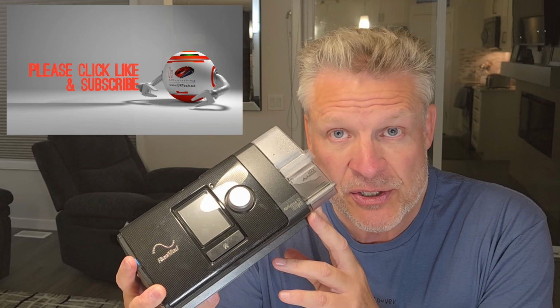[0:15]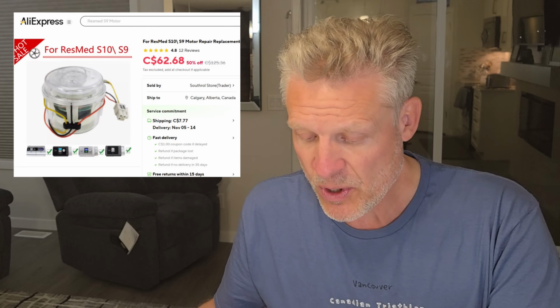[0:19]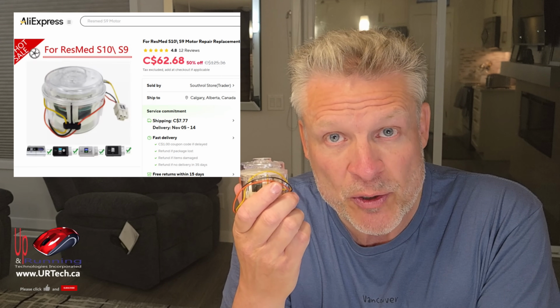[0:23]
We have a ResMed AirSense 10 here that has a loud pump, a loud motor. And so we're going to change it. This isn't that hard to do. You can do it if you have any capacity to use a screwdriver at all and are the tiniest bit adventurous. So we sourced a replacement motor off AliExpress, that's part of Alibaba, for about $75 Canadian, including shipping.
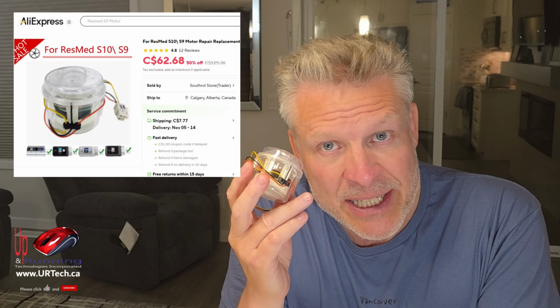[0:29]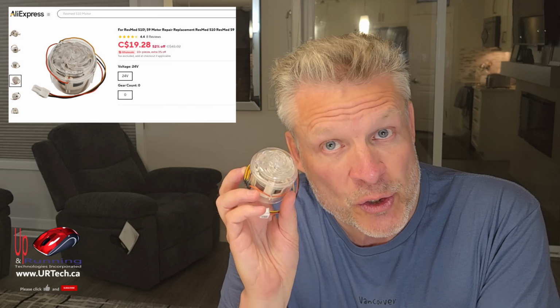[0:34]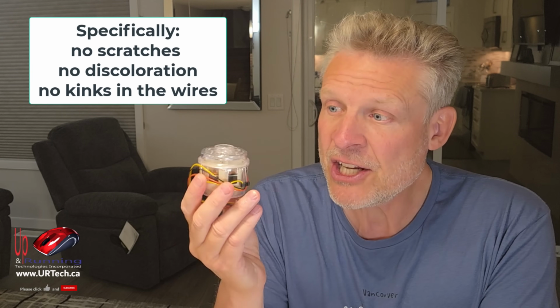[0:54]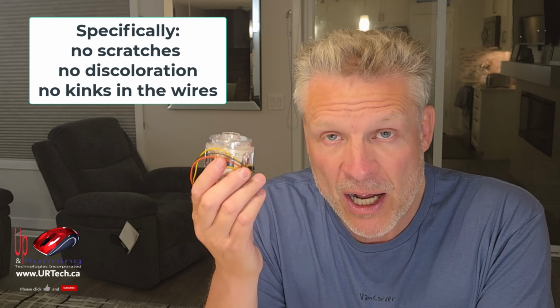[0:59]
And you've got to be careful when buying these replacement parts from overseas, because you can get used parts. Yes, they part these things out and sell you used parts. So if you find one for $20 or $30, yeah, it's probably used. Probably not what you want, whether it says tested or not. Whereas this one, I'm quite confident was new based on the condition that it appears to be here and how the pricing was consistent from other new vendors. But there's really no way for me to prove it. So I'm a bit of a gambler on this still.
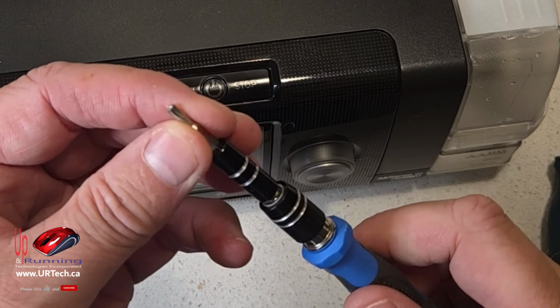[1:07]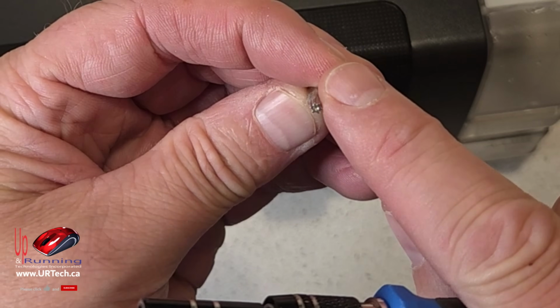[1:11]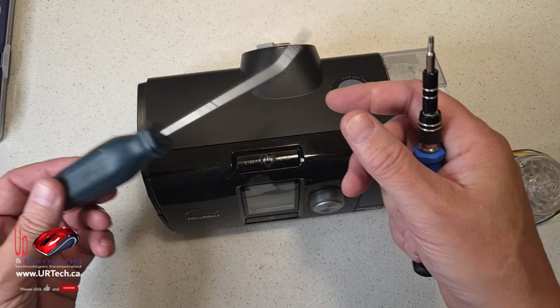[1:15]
So what you need is a Torx T10. The other thing you'll need is some sort of a pry tool. And I've just got a little screwdriver here. You can use an old credit card if that works for you.
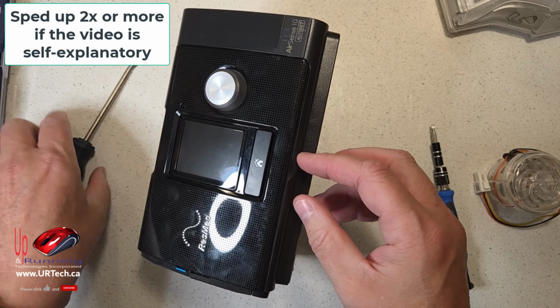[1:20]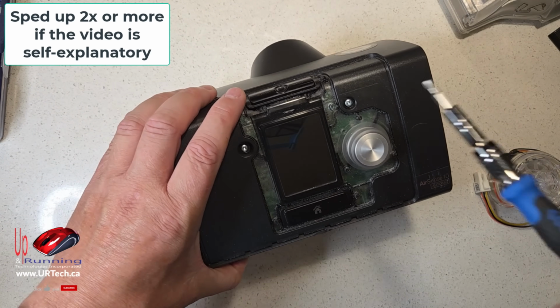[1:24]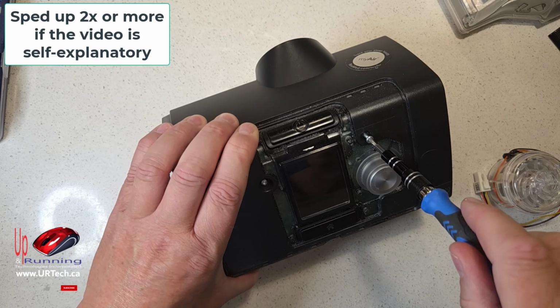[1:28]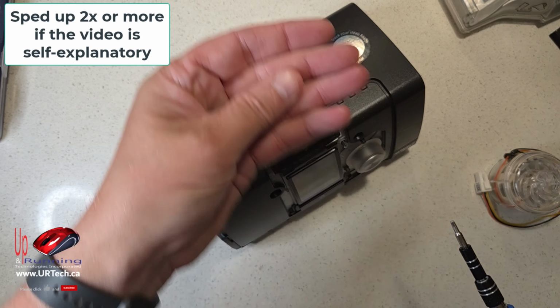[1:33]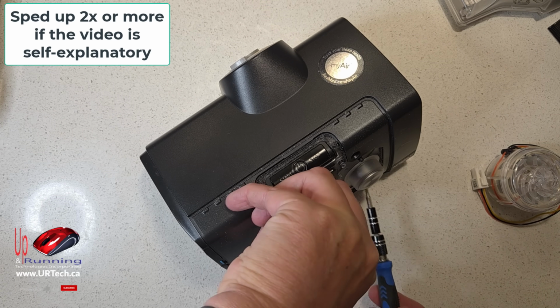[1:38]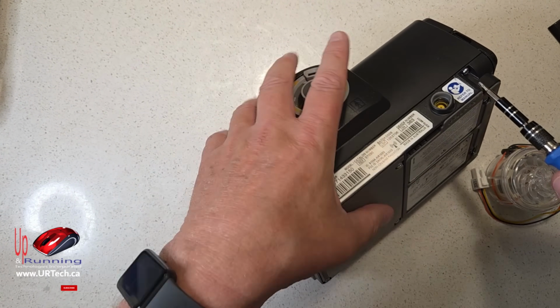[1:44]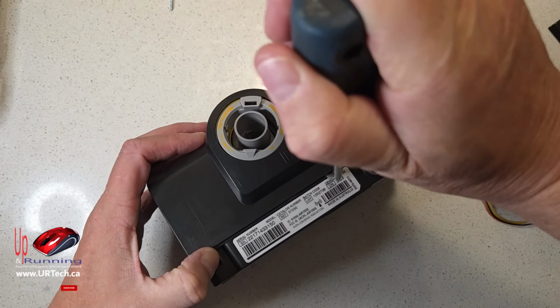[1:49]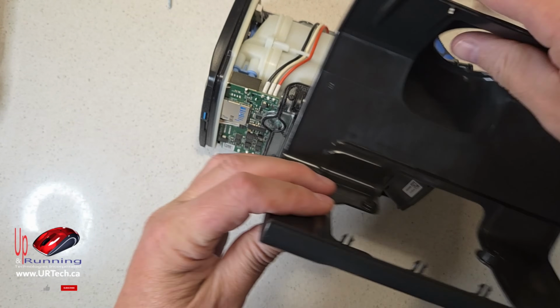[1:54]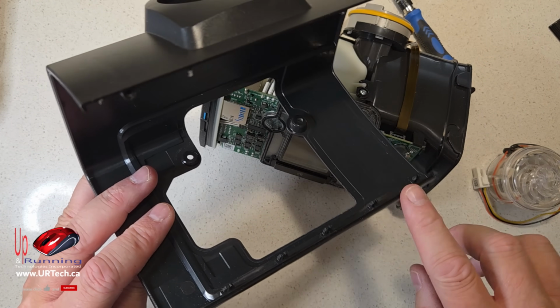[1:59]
One of the things we always tell you is to lay the screws out in the order in which they came out. However, I believe all of these are the same, so it doesn't make any difference. You don't need to worry about them. Hooks here. That's why you start from the back and not from the front. If you start from the front, you're going to break these tabs off. You don't want to do that.
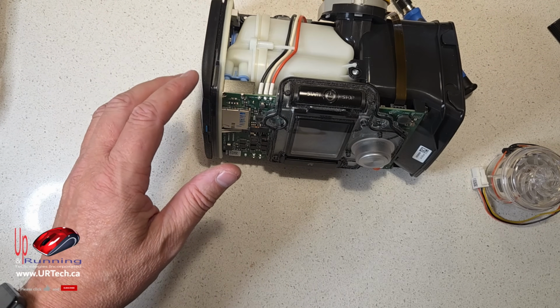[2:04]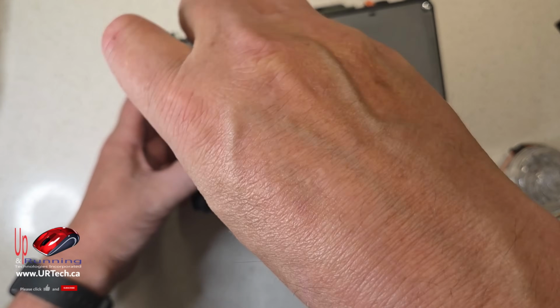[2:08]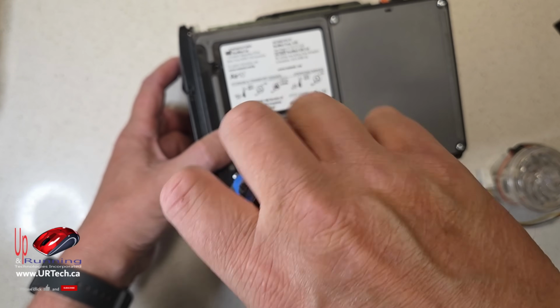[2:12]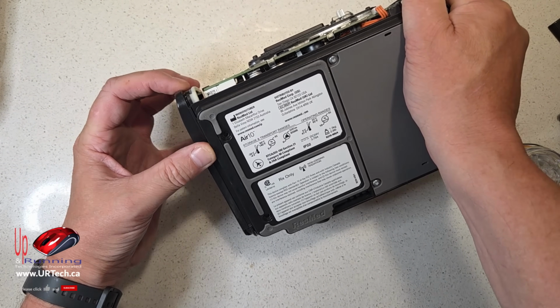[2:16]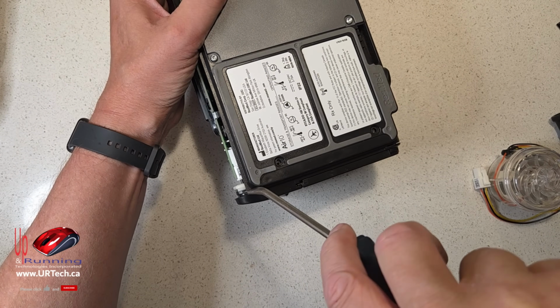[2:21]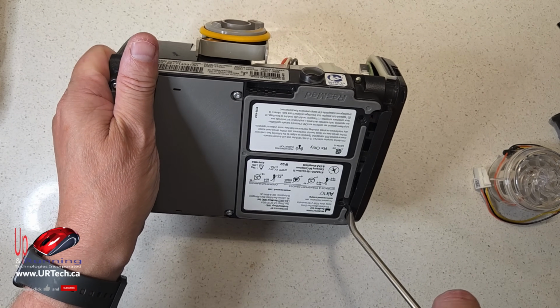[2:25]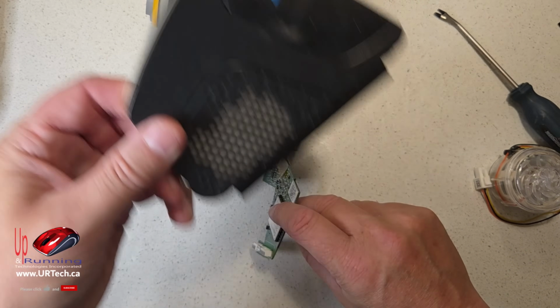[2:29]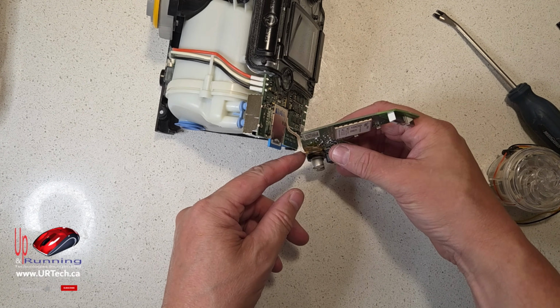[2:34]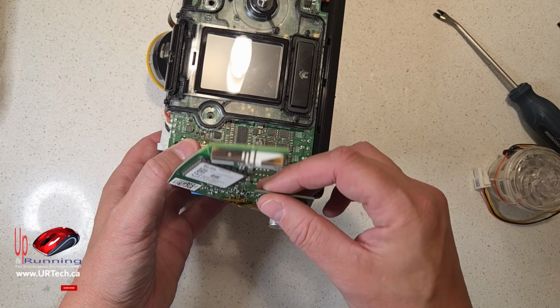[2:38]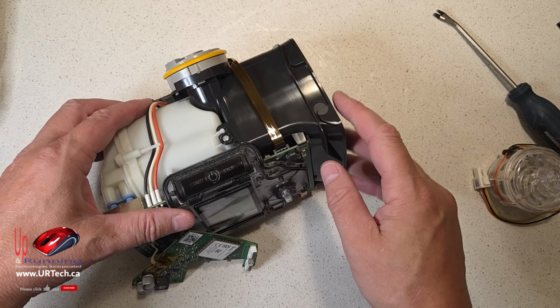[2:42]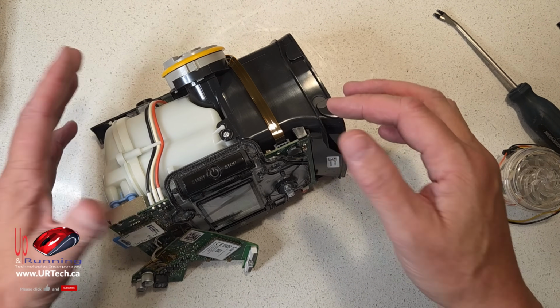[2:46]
I'll just pull. Nothing there. This is your cellular board. You do not need to disconnect it. Just be careful with the wire. If it does come out, you can simply put it back in, but why bother take it off? Just leave it. Same thing with this. This wire will slide out and you can just push it back in. It's friction feed, but you don't need to. So why bother? Just leave it. Just be careful.
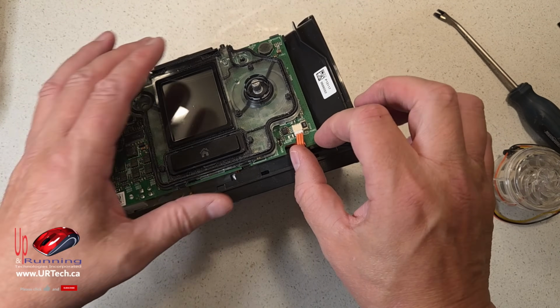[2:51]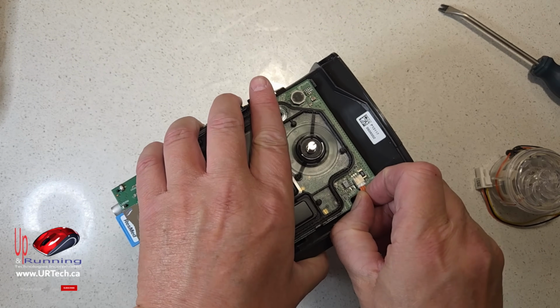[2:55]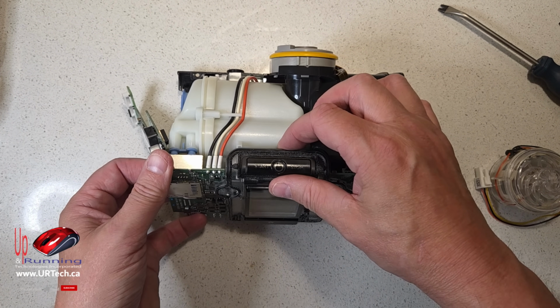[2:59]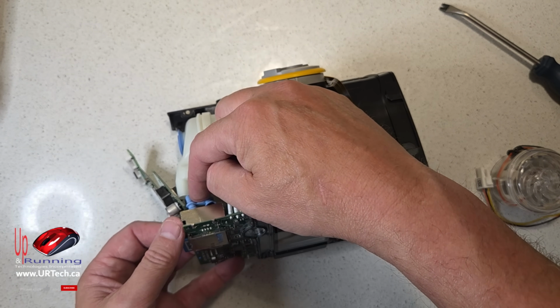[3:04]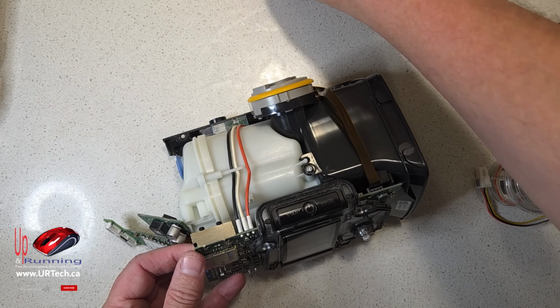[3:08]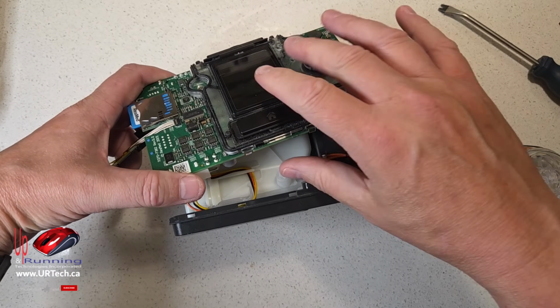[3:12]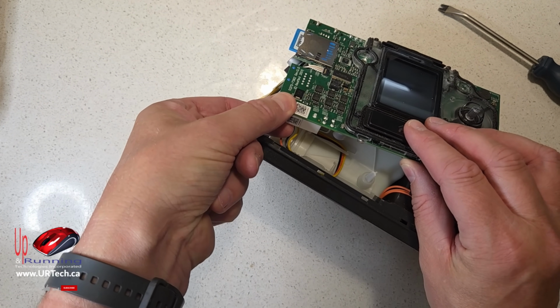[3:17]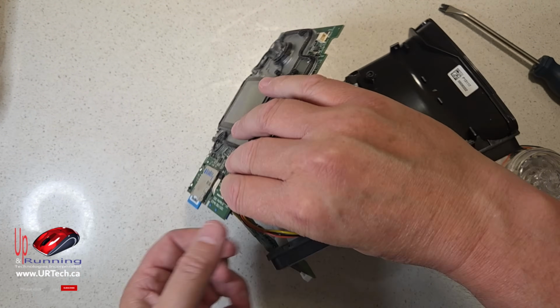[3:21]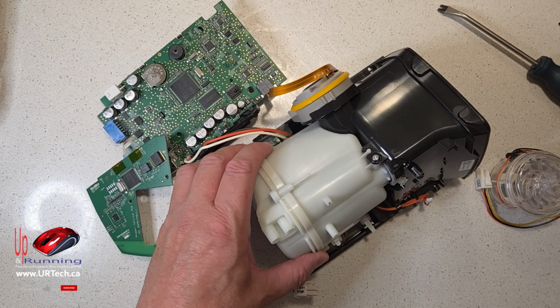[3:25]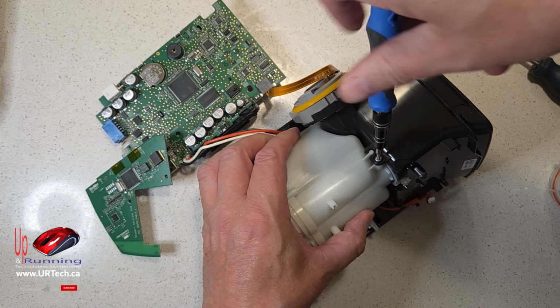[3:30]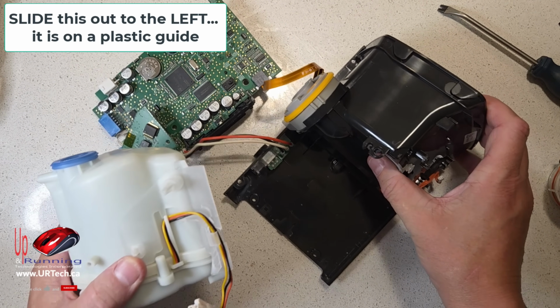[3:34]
This one you do have to take off. This should just lift out. Watch those, make sure you grab that so you don't lose it. There you go. Put that aside. Lift this over. Oh, right, there's a Molex connector here. So apply pressure to the back and slide it out. Yep. Now we have to remove this guy, which contains this motor. And there we go. Now let's move all of this away because we don't care about it just now.
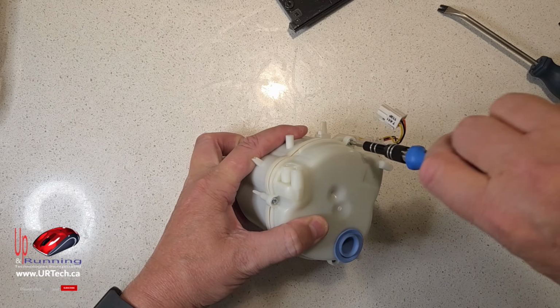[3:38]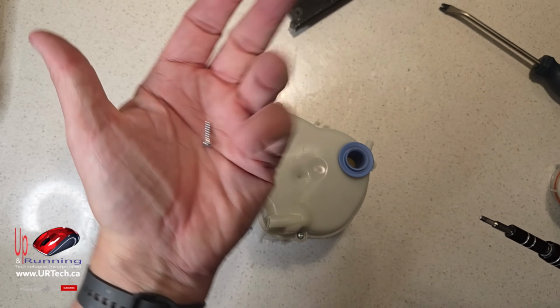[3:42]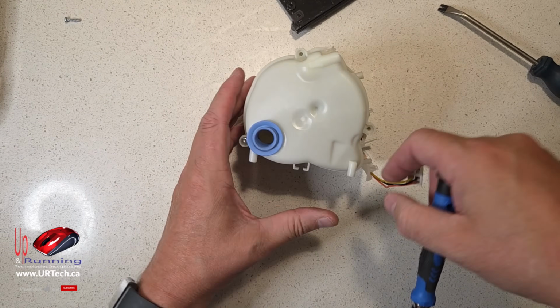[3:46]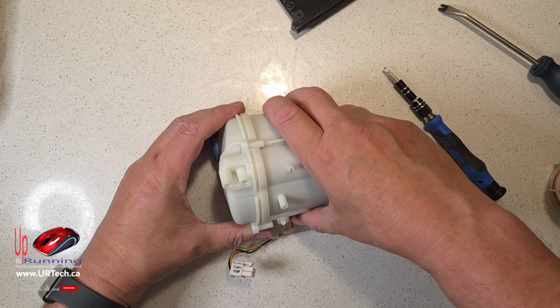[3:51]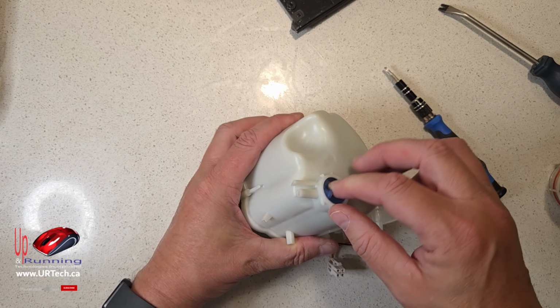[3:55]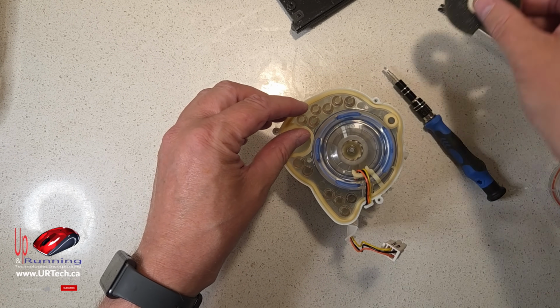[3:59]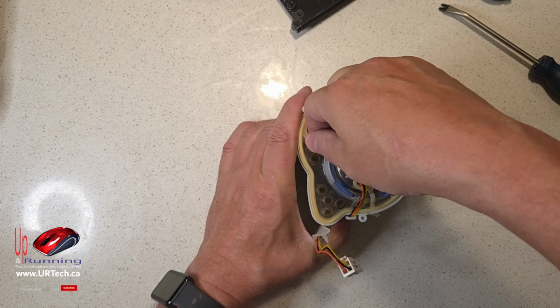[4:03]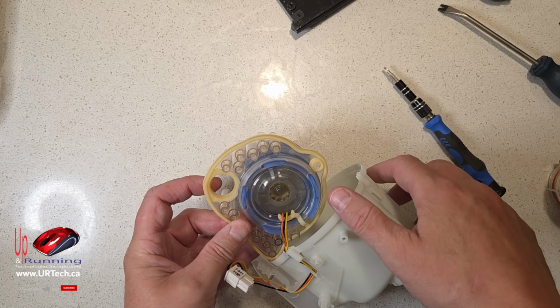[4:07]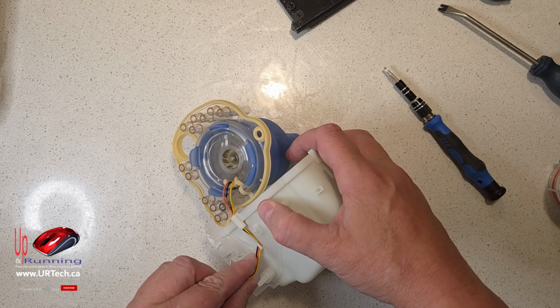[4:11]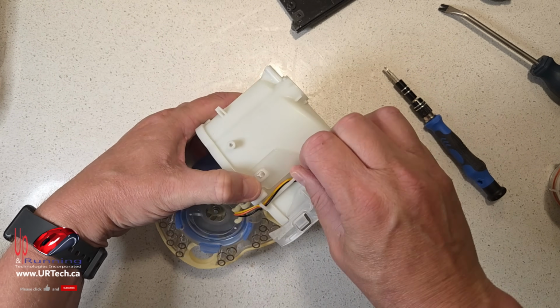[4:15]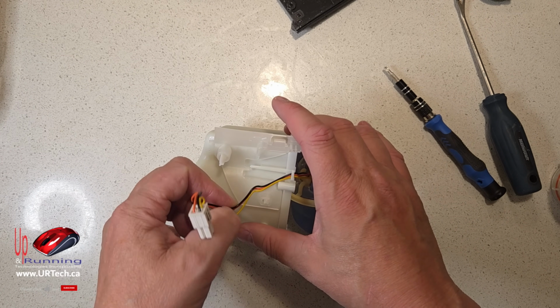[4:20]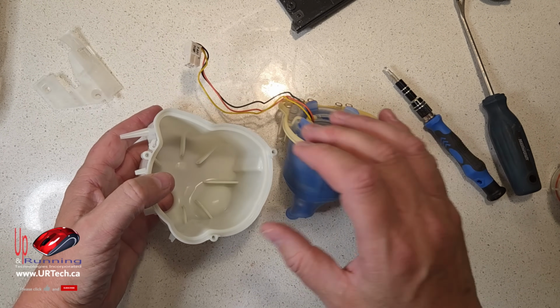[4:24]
Still using the same screw. Now you have to push this through to get this out. And pull this all out carefully, including this diaphragm. Put your finger in here and lift. There you go. This has to come out. It's your wiring clips. Just pull the wires through one at a time. Oh, there we go. That worked better than I thought. There we go. Now just slide this off like that.
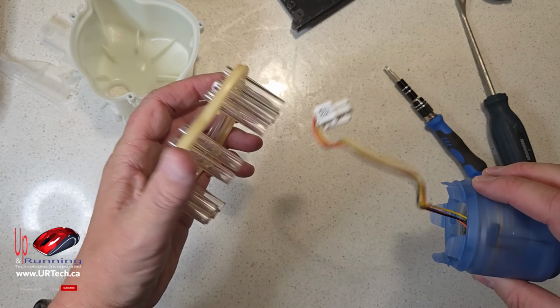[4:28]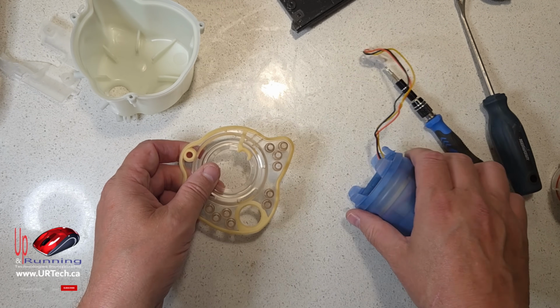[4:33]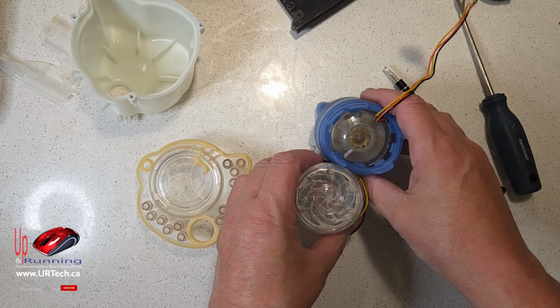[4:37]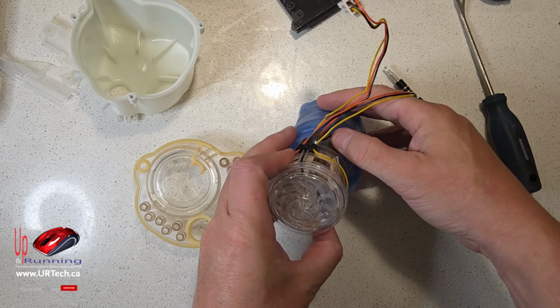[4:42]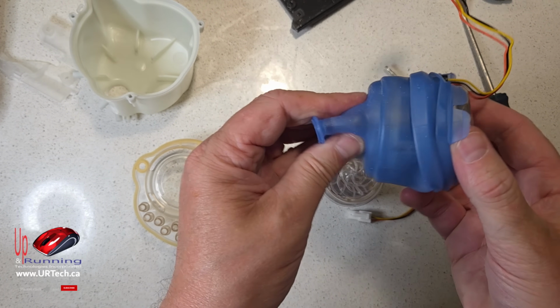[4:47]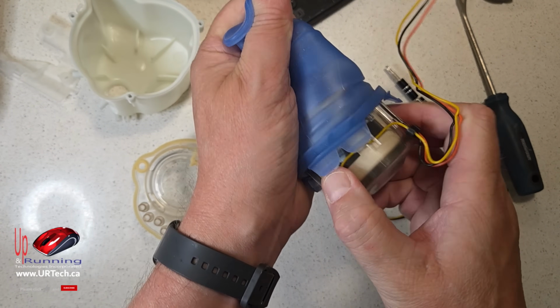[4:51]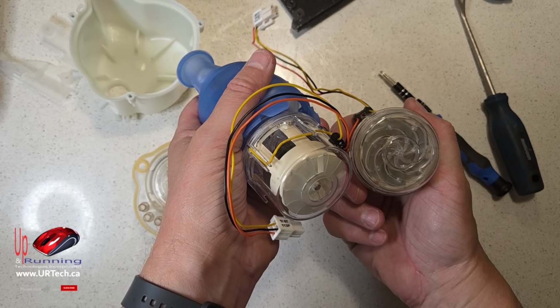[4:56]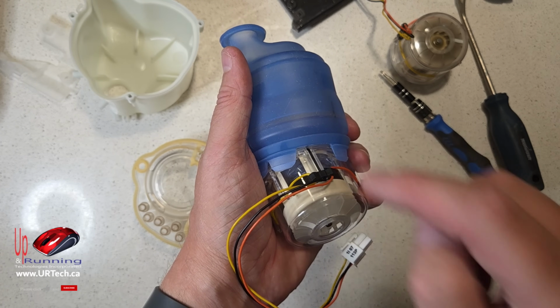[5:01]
So remembering that that's where the wire goes, and you'll also notice that it's soft because you never want to have a pinched wire. Now take a look at your new motor and where it will go. That wire will come up like that. This is quite pliable, by the way, so don't worry about it. You're not going to damage it. Put the new one in. So that's the old one. That's the new one. And again, make sure that the wire is coming up in the same spot.
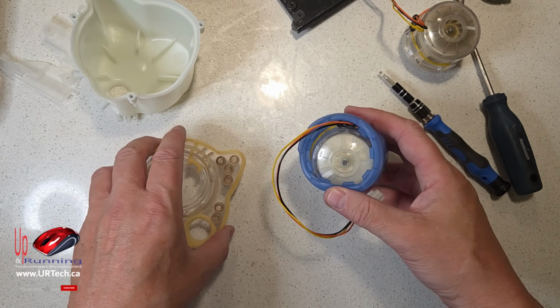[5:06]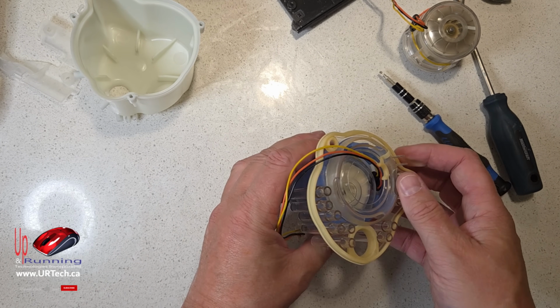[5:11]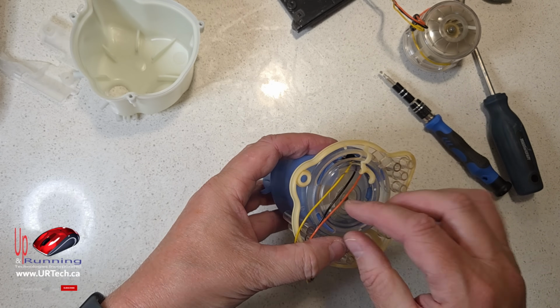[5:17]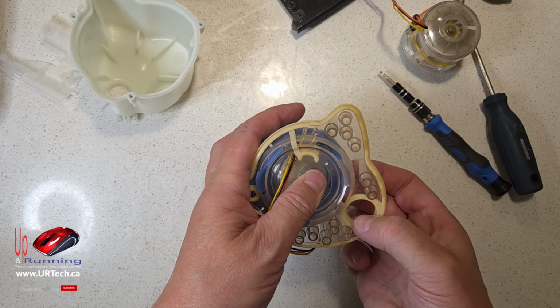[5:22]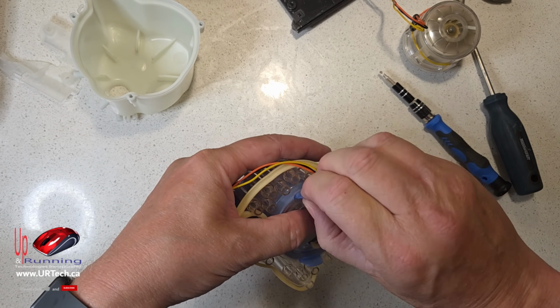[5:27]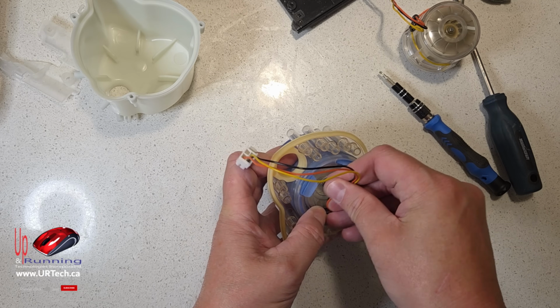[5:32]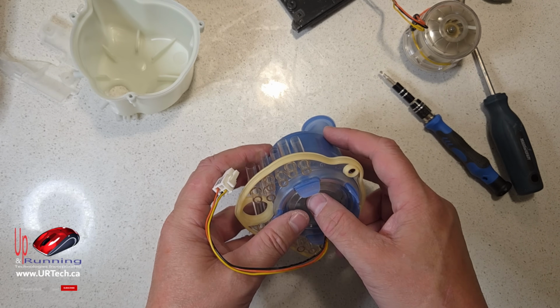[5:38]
There we go. Jam it through. Make sure that wire is there so it's not getting pinched. And pull these through. This is a bit tedious, but you can do it. If I can do it with no patience, you can do it with a little patience. Oops, you see I screwed it up. That has to go there. There we go. And you see there's only one way for this to go in.
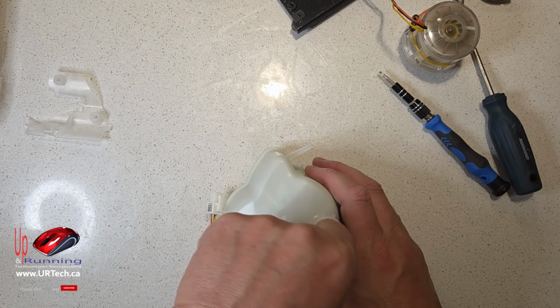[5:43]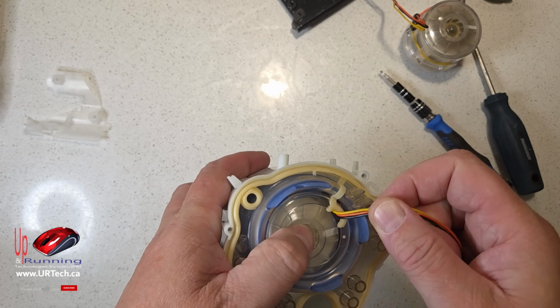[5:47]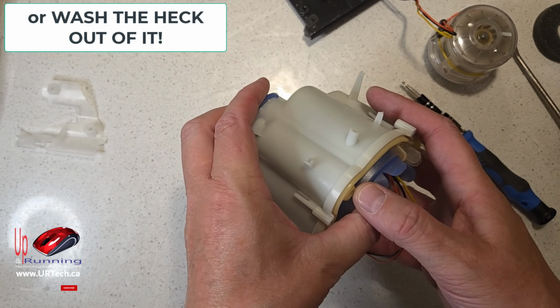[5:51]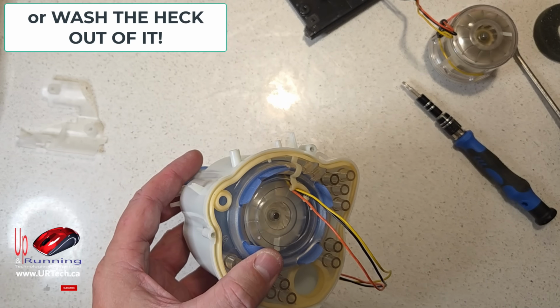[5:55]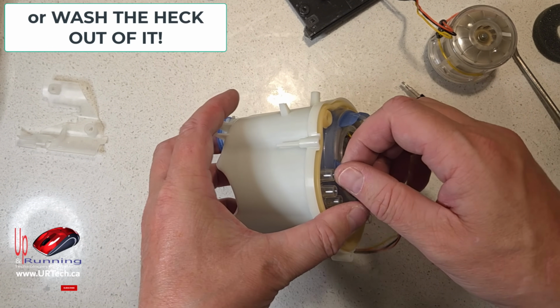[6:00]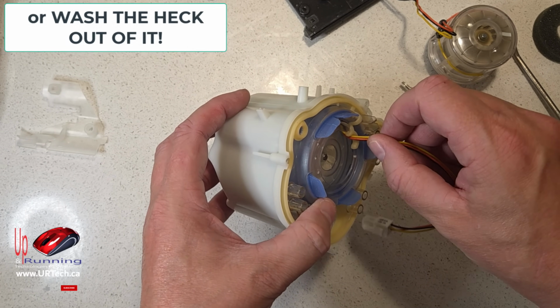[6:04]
Okay, just a note, that blue piece, if you've got a smell that you can't get rid of, and you've already cleaned out your reservoir, replaced your hoses, that's probably it. So if you're a smoker or somebody was smoking, that's probably what you need to replace. And it is a consumable part, it is a replaceable part.
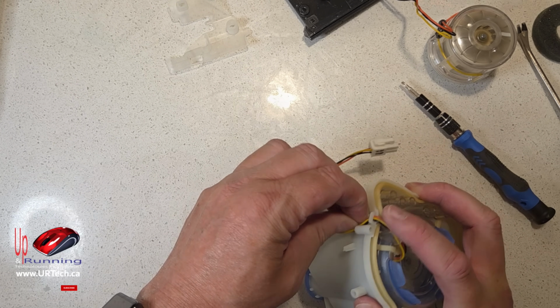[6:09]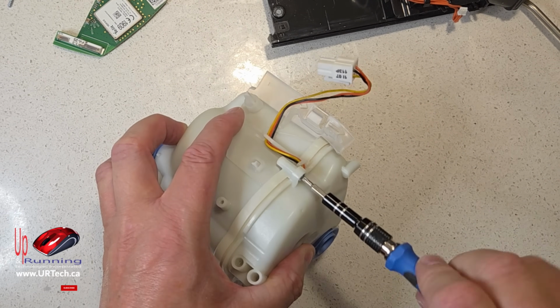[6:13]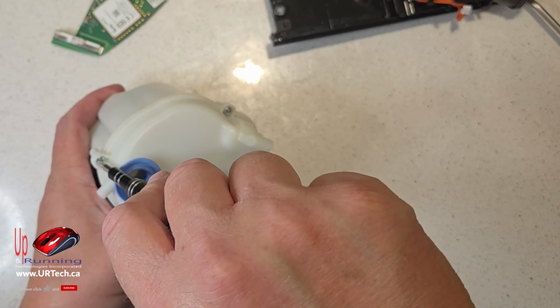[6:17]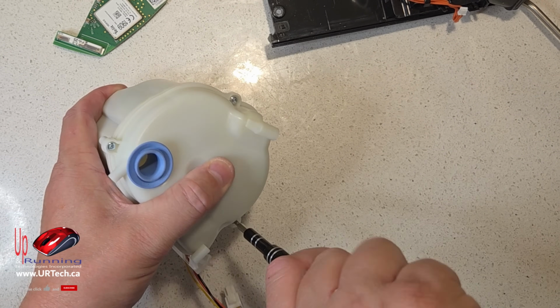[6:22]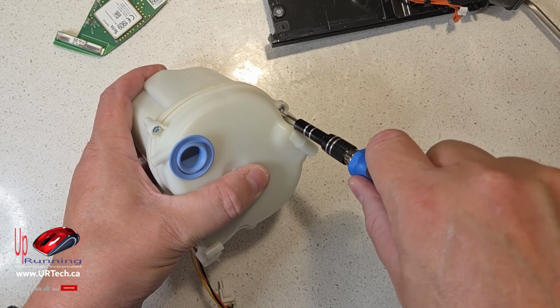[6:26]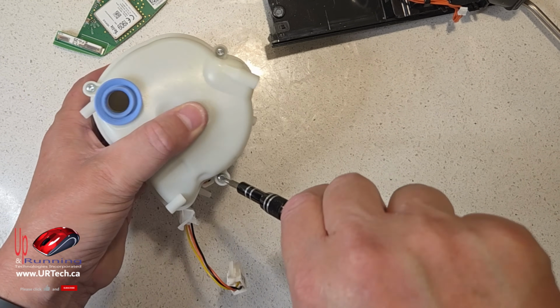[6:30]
So, one wire at a time, the foam block back in. Before you finish up, crank these down. This needs to be watertight. You want to keep it sealed. This is what's keeping your machine quiet. And you want to make sure that there's nothing rattly in here.
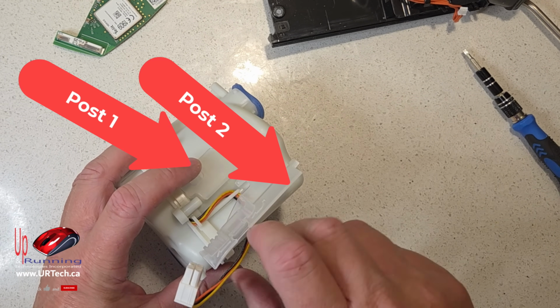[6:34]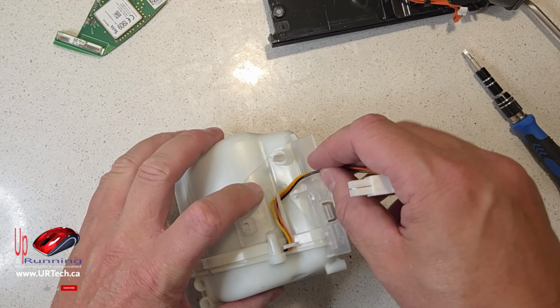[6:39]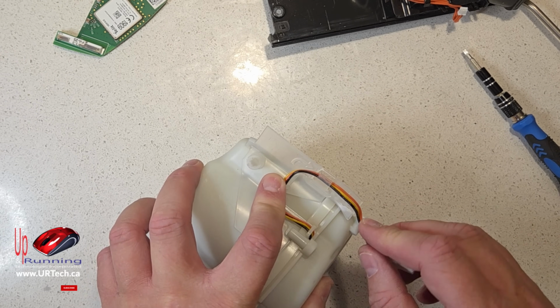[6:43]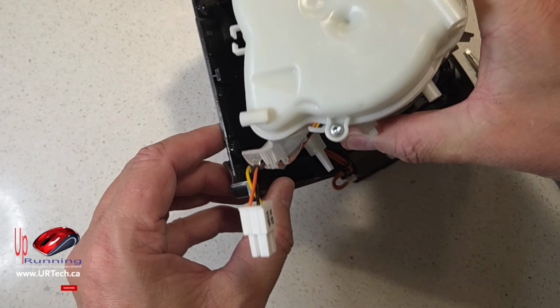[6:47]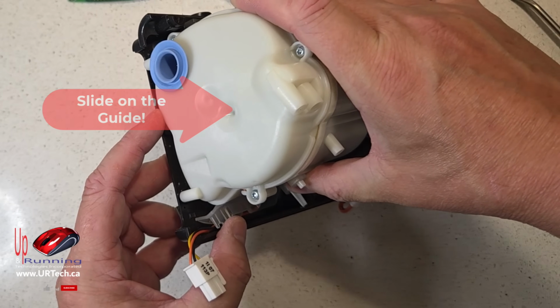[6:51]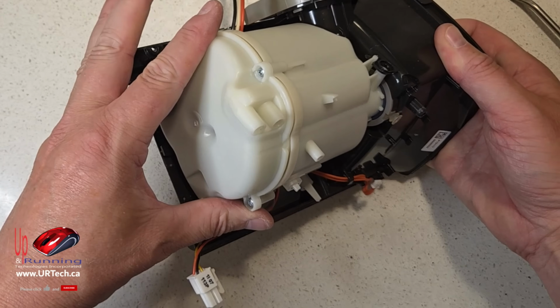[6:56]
There we go. There are two posts here. Put your wire around. You'll see that there's an arrow here showing you where this wiring harness should go. So what you want to do is put it up on end like this so you can see it, put the guide on, and then slide it in, just like that. There we go. Make sure that that is aligned, just like that. Now it's nice and tight, yay.
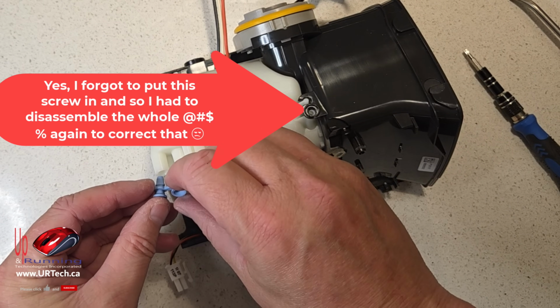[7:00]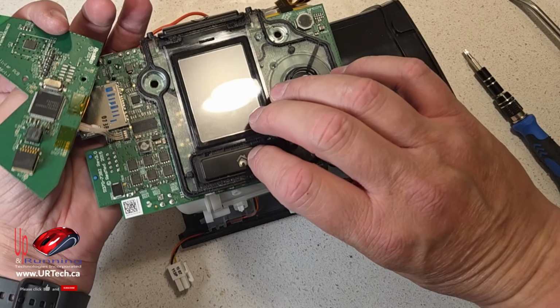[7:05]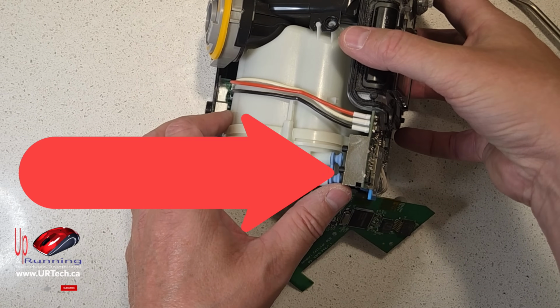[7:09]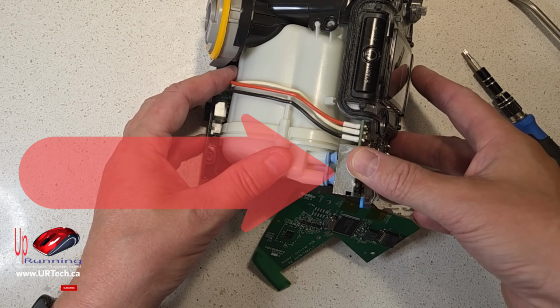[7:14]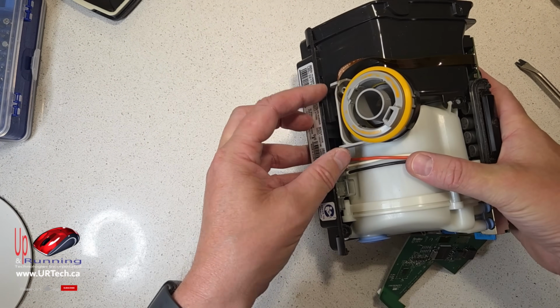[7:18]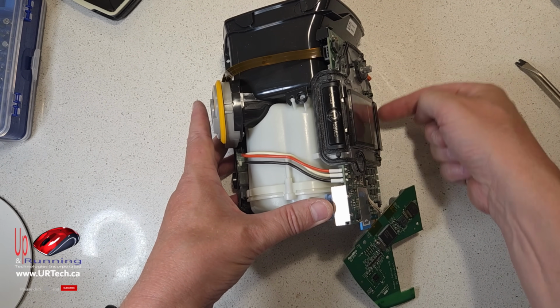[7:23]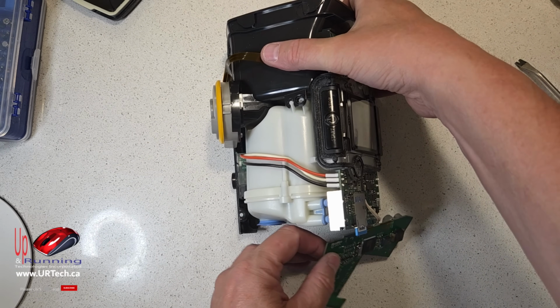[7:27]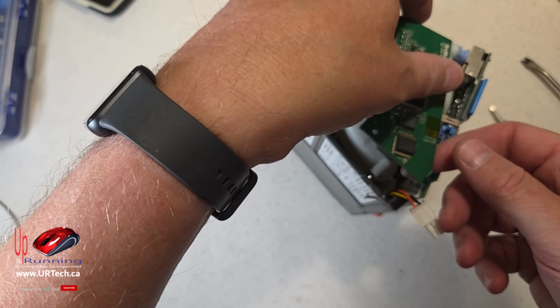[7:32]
Now put your nipples back on, carefully flip your circuit board over, make sure that the nipple connectors are connected. There we go, right there. Squeeze that in. Try to keep this ribbon as straight as possible. And that should just end up on posts that are around, so it should feel fairly solid, and that does. Now you might think, okay, great, I'm ready to screw this back together. Nope. Two things you have left to do.
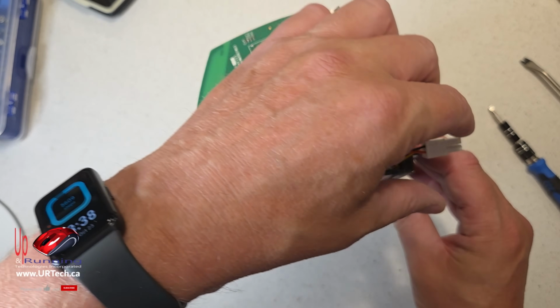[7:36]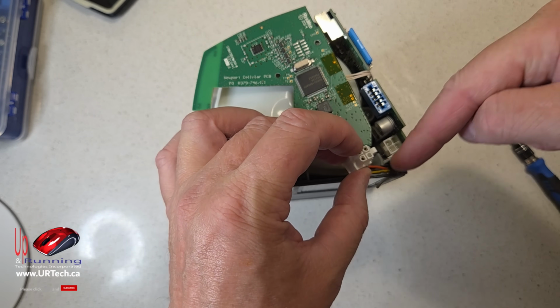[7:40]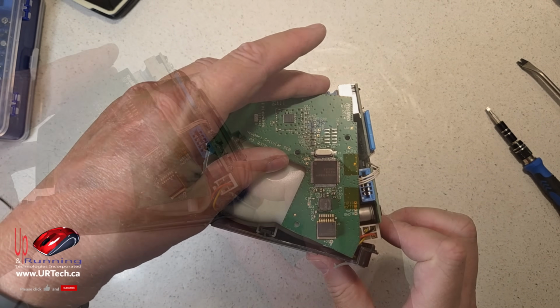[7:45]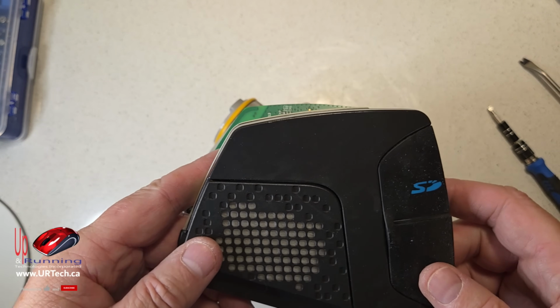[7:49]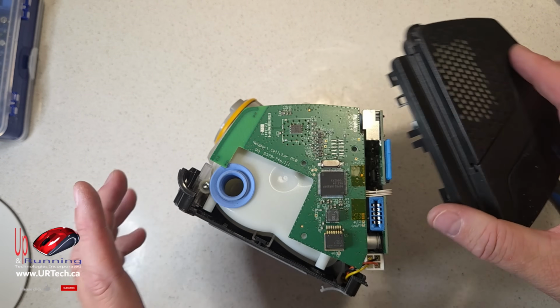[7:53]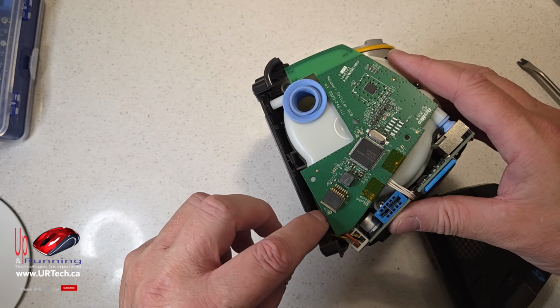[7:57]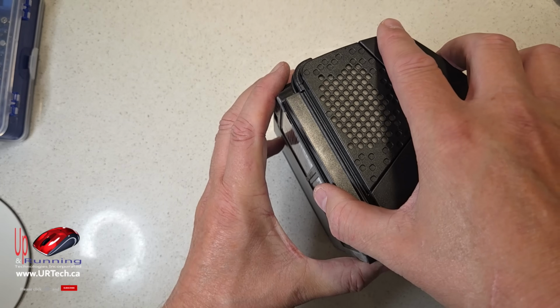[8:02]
One, put your Molex connector back on. That's your power connector. So take this, that little clip right there goes on the inside. And you'll hear it click. Leave this up on its end, straighten this out as best you can. Take this end cap, and you'll notice there are holes here. That's because screws go through it. So you want to make sure that the screws here are lined up with these posts. And then this goes in between the two. Let's just put that on. Look at that.
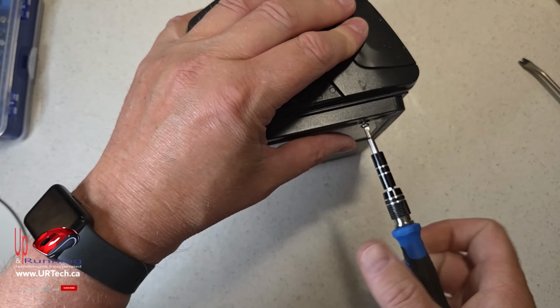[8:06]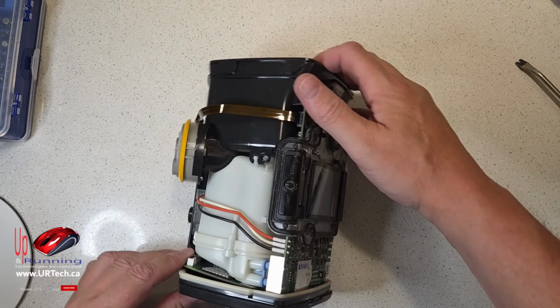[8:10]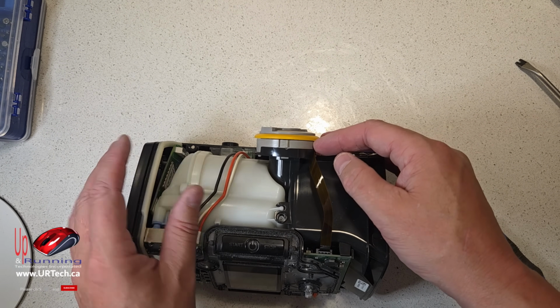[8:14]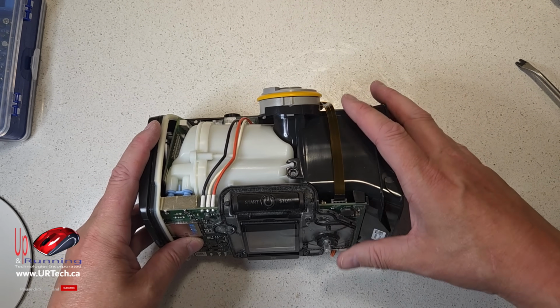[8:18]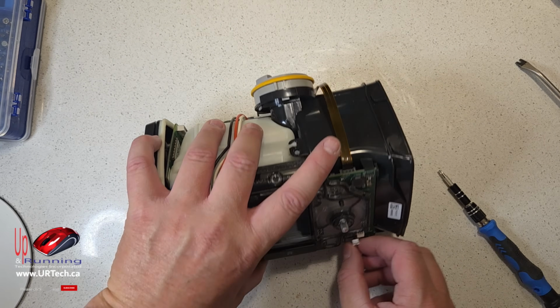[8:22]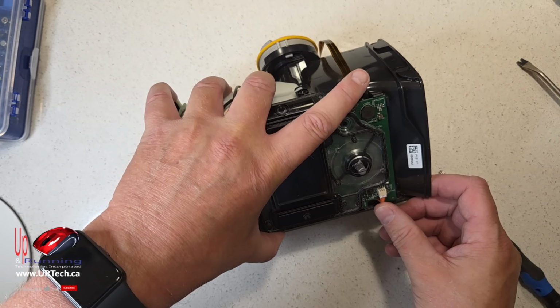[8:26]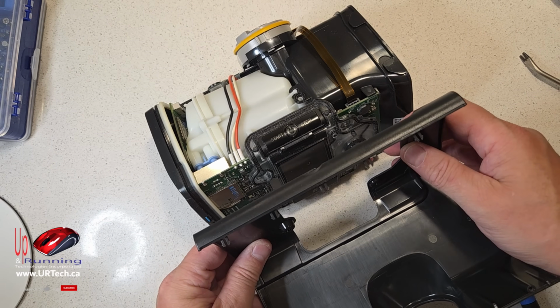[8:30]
There, now this ribbon at the back, it comes up around and sits down flat there. If it's come out, it's not a problem. It's friction fit. You can just squeeze it back in. And we also need to put this little power connector on at the bottom. There it is. Just pops on. Easy peasy.
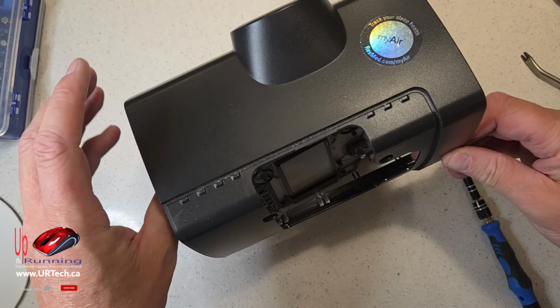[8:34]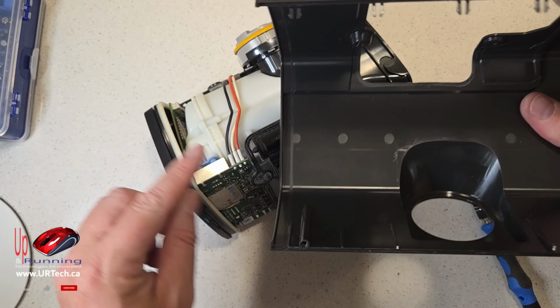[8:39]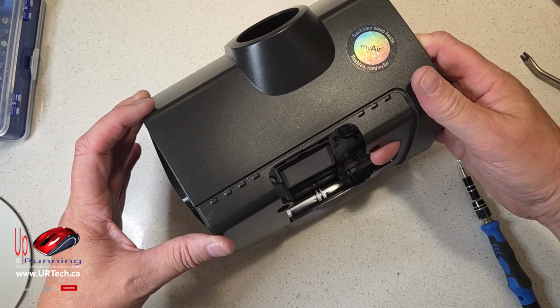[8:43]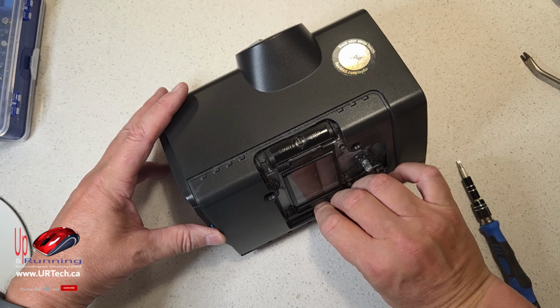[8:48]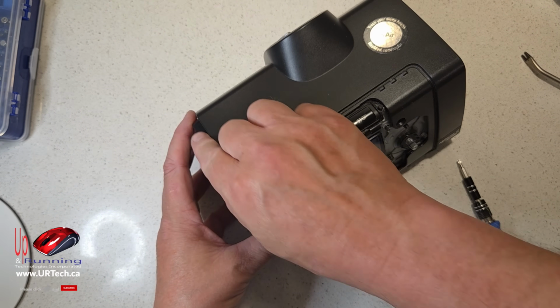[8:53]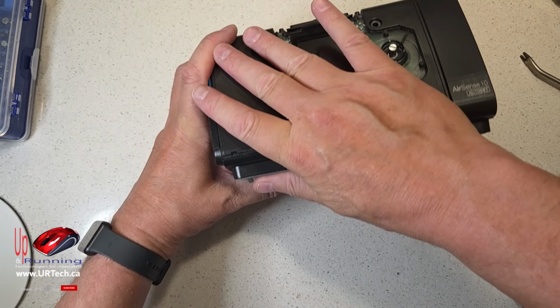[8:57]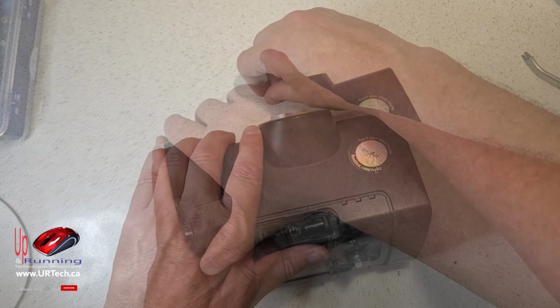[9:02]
Okay, now when you're putting the housing back on, there's three things to do. One is, remember, you've got those clips at the front. So you've got to start at the front. You've got to pull this over the back. And you also have to align this channel with this channel. So it's not hard, but it's a number of steps. So I'm going to slide this down a bit like that, and then pull this down. There we go. So it's on sort of at the back, and I'm going to align these channels, and now I'm going to clip this in. So I'm just going to force it. There it is. Sweet. Put your two screws back in the front.
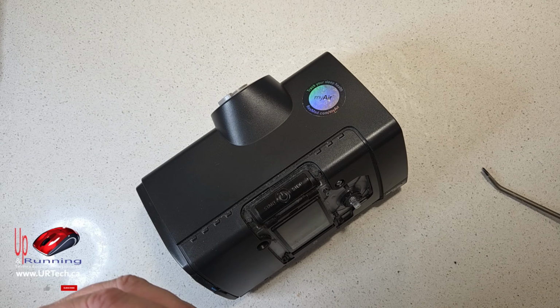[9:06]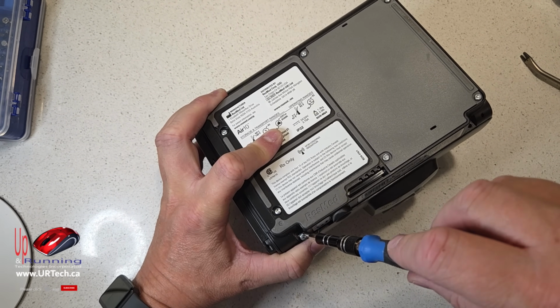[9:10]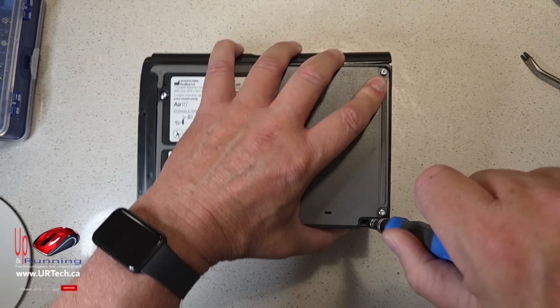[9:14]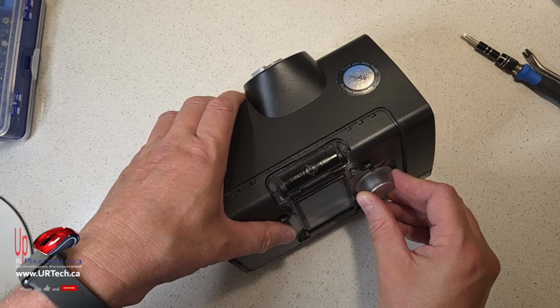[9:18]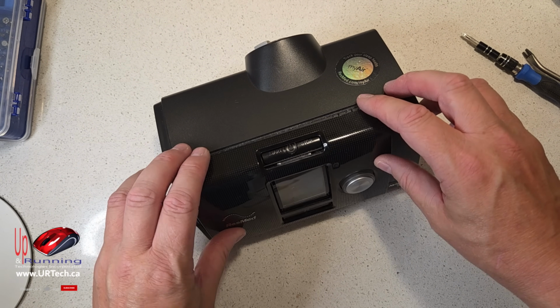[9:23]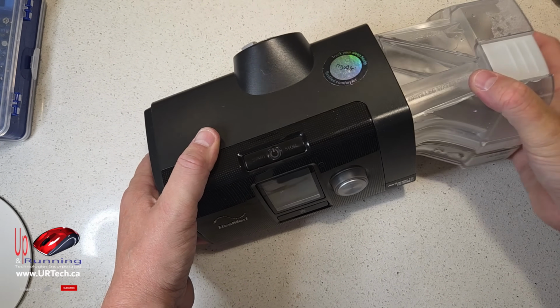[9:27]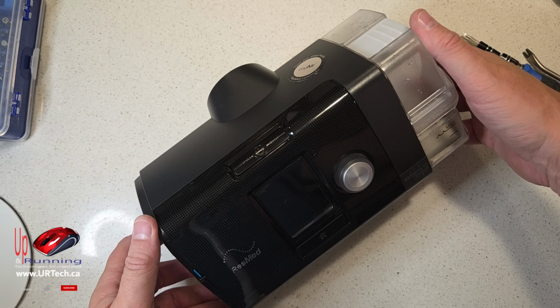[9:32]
Pop your dial back on. There's no notch, it doesn't make any difference where you put it. Put your cover faceplate on, just snaps on. Put your water back in. Easy peasy, 10 minute fix, done.